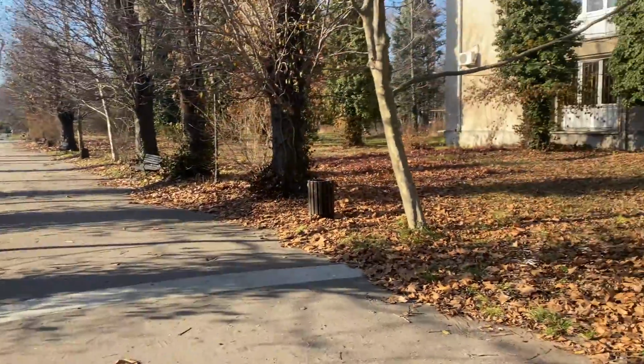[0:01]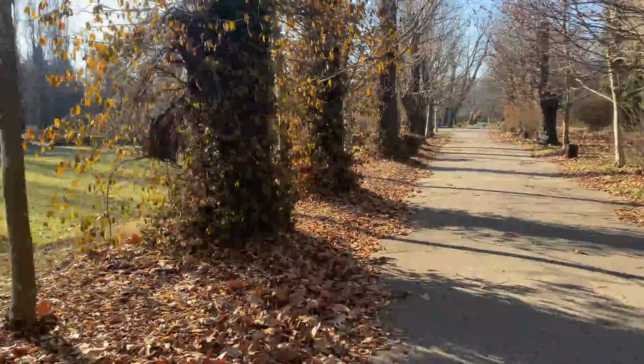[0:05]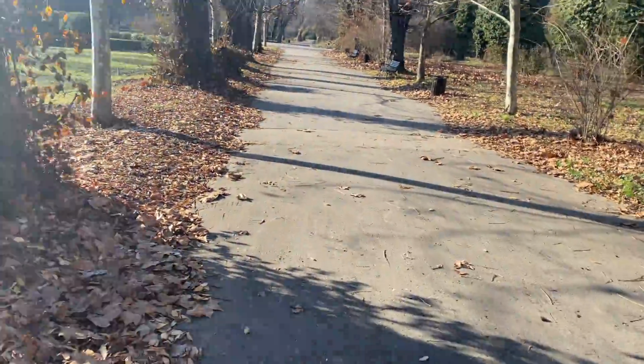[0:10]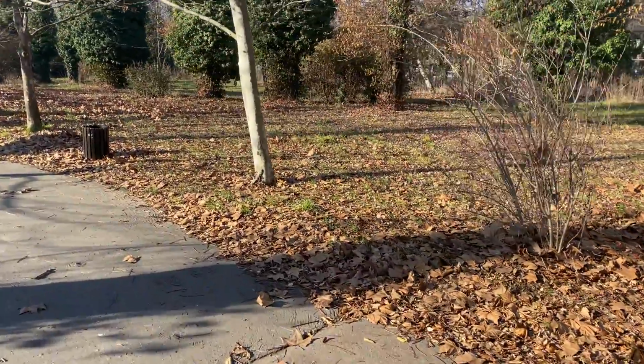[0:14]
Winter days at the botanical garden right here. I'm just looking for some props for this video actually, and I need to find some sticks, right? Let's see what we can get.
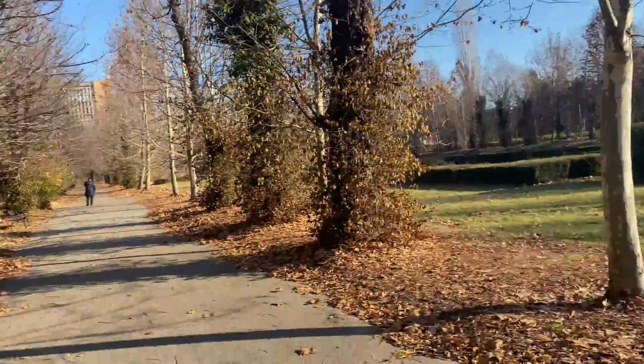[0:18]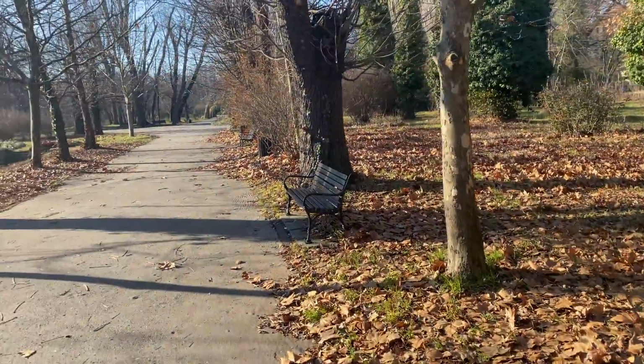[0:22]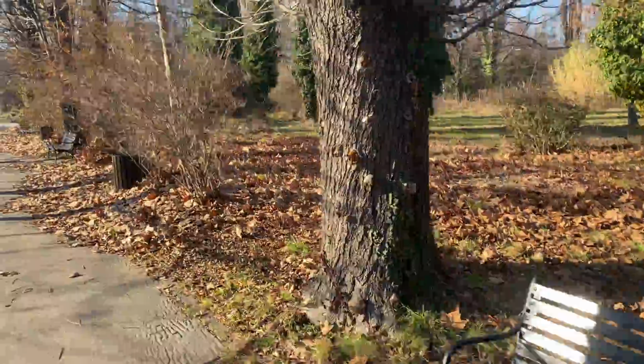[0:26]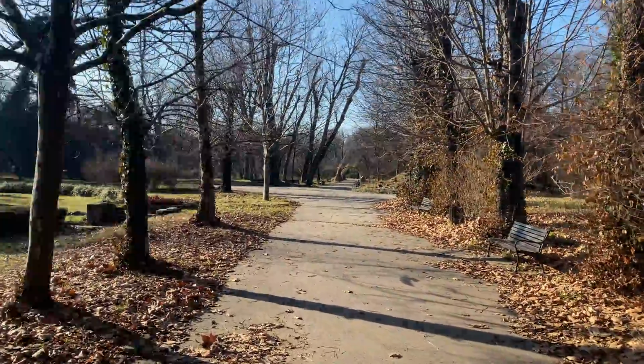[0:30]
So if you guys want me to film around the botanical gardens, maybe in the spring, just let me know, okay? And I'll do that for you.
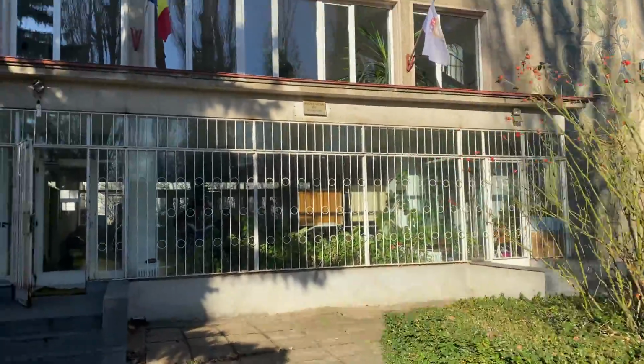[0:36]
I found some sticks. Let's go to the lab and show you what we'll do today.
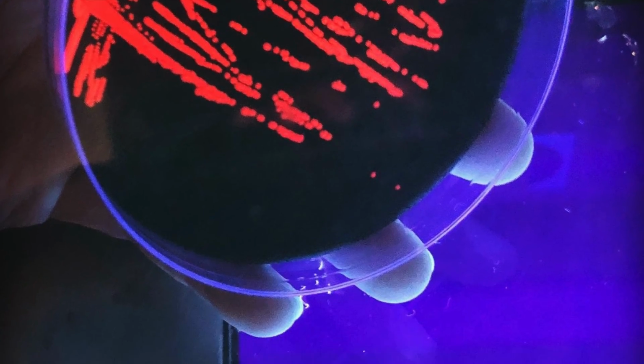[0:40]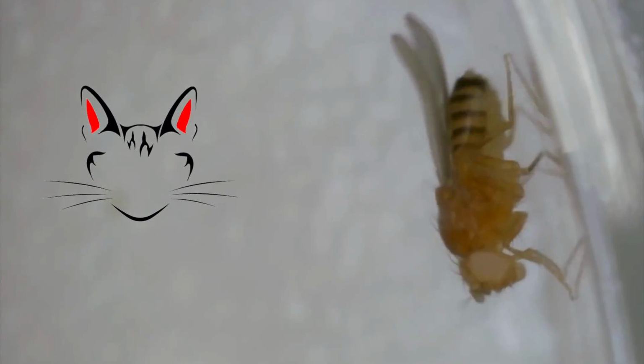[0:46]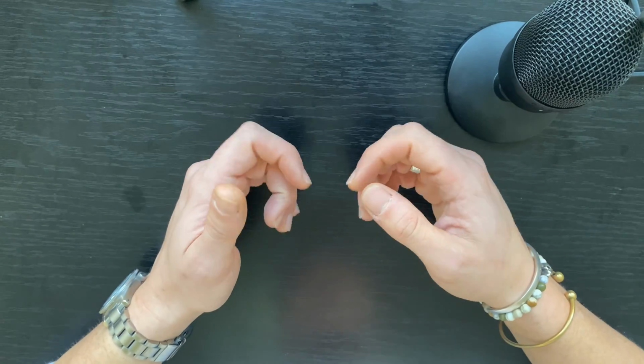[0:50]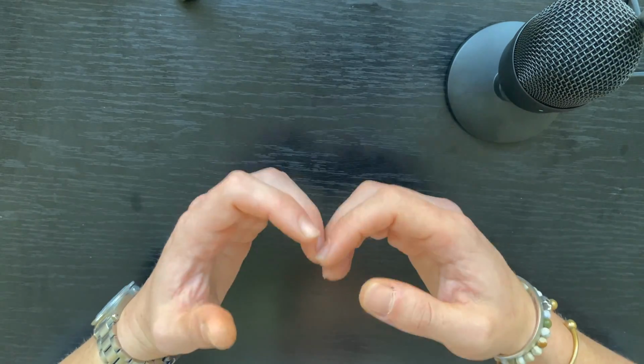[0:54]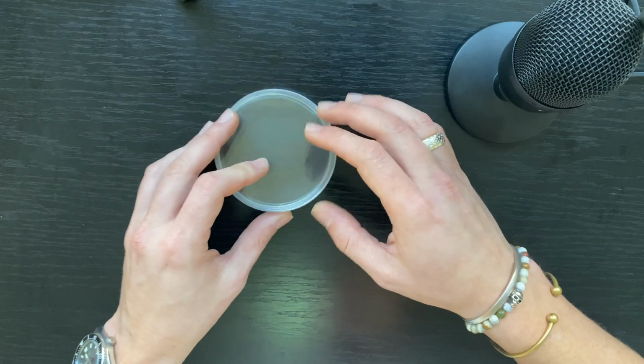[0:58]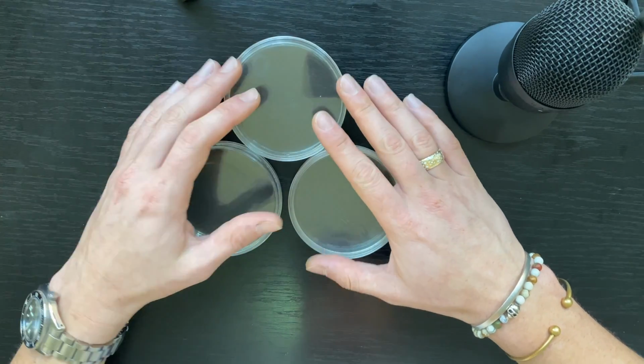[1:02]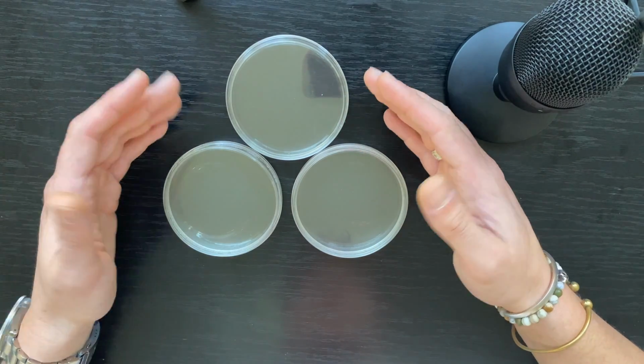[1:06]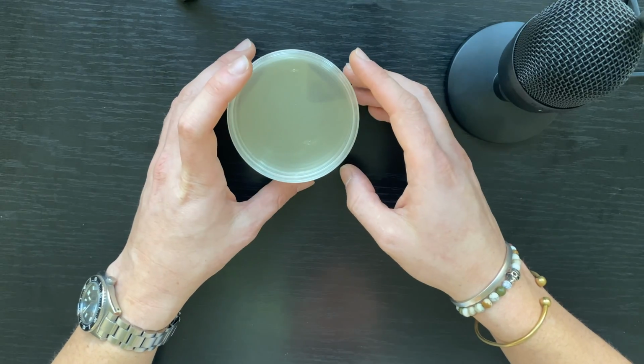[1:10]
Hello again and welcome to the third video of the beginner series in which I teach you how you can do genetic engineering at home in a DIY setting. So in the previous video, we've poured agar plates. Now, I've got these stored in the fridge. However, in order to spread bacteria on them, I'm gonna need to warm them up at room temperature. I am gonna need one more thing though.
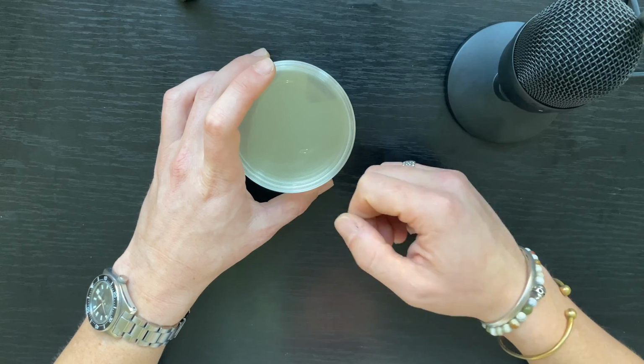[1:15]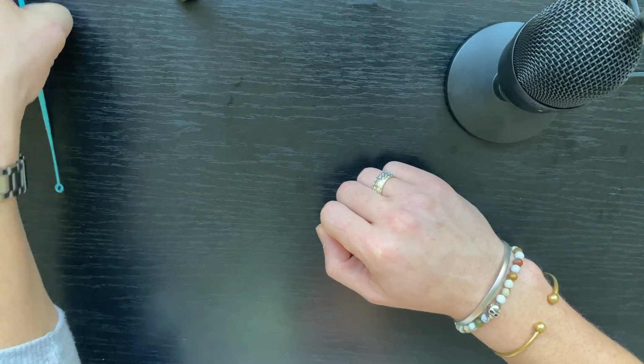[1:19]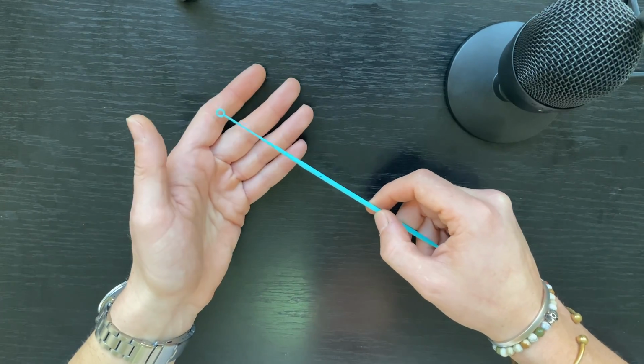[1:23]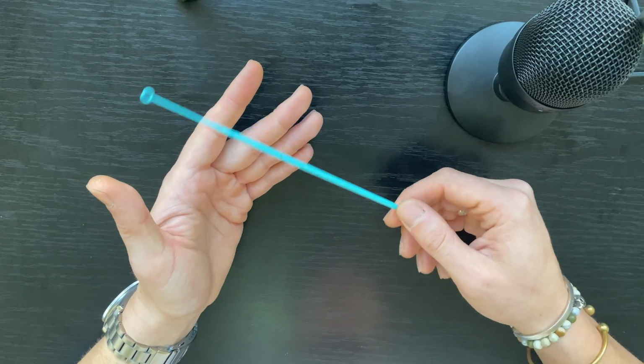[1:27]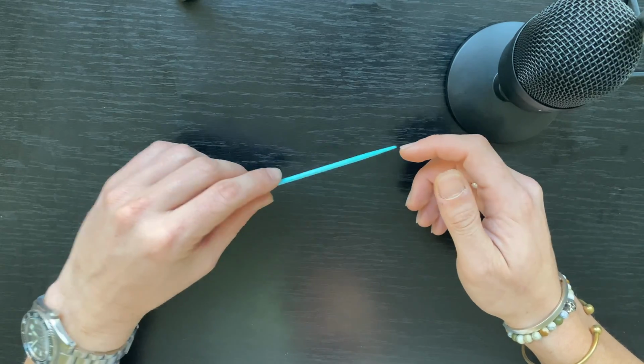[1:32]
I am gonna need inoculation loops. Now, an alternative would be cheap, plastic, single-use, sterile inoculation loops. These are readily available and you can get them for cheap. However, where's the fun in that? Today I'm gonna teach you how you can make your own.
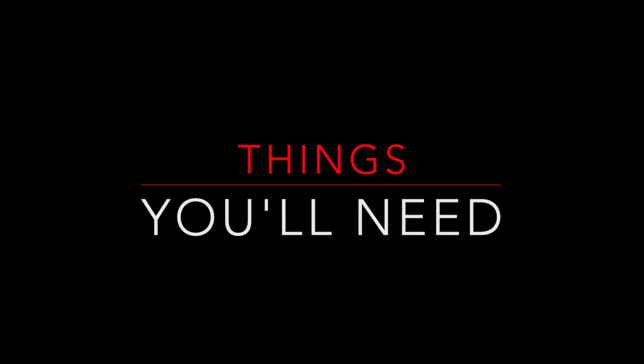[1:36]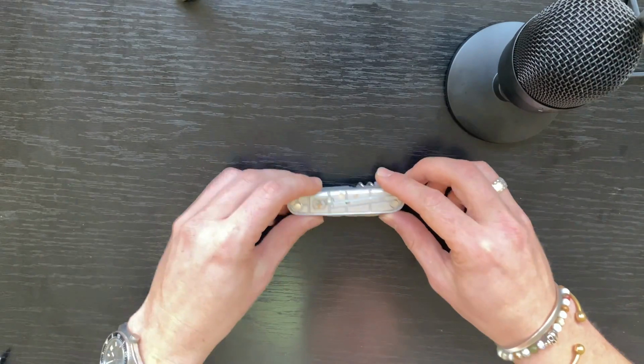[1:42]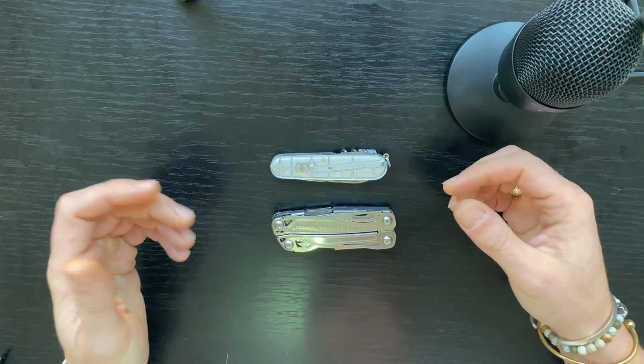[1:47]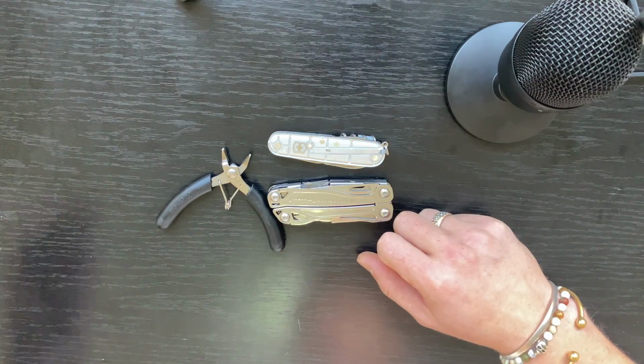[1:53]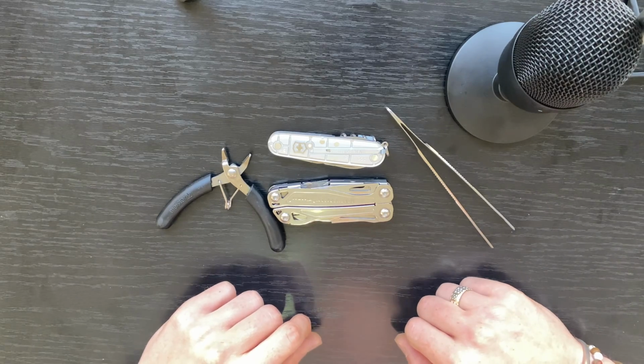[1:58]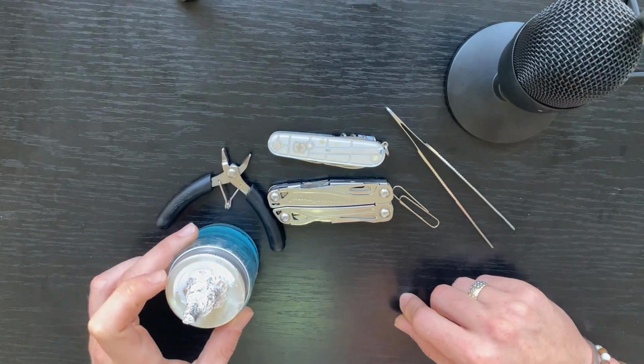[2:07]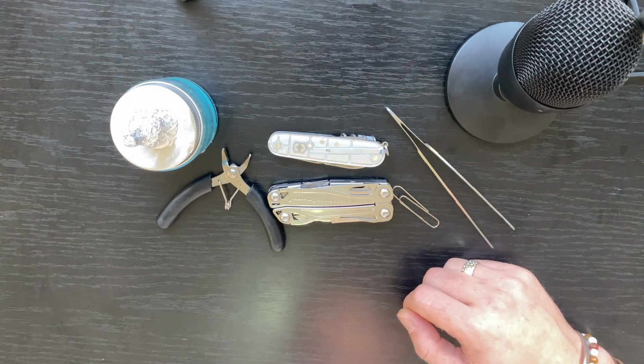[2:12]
So things you'll need: a pocket knife, a Leatherman multi-tool or needle nose pliers, a wire cutter, tweezers would help also, a paper clip, the DIY lamp from video one, a lighter,
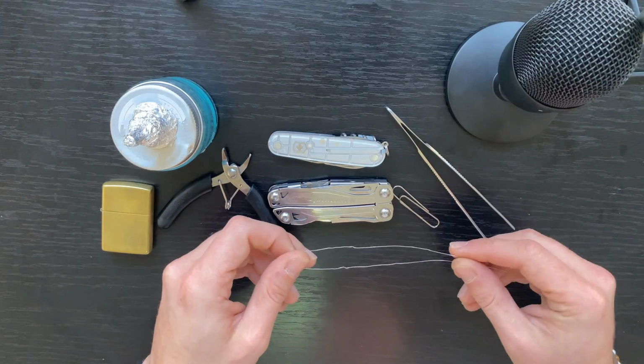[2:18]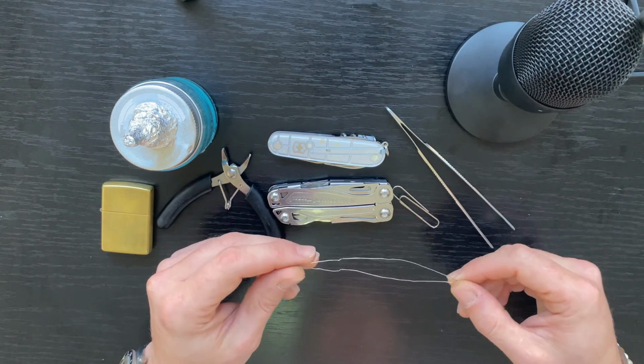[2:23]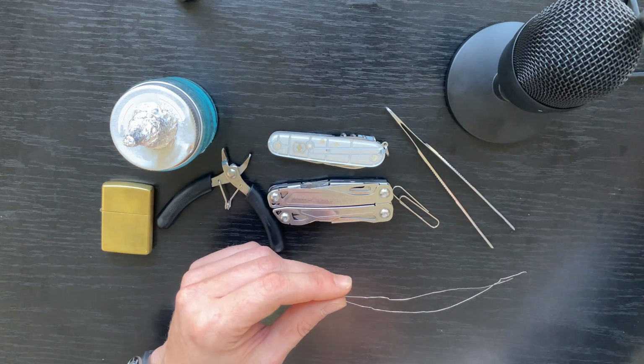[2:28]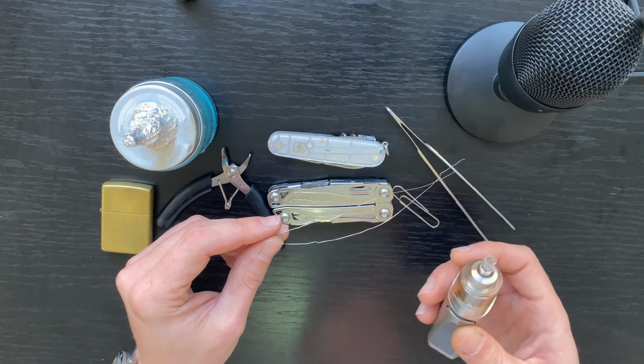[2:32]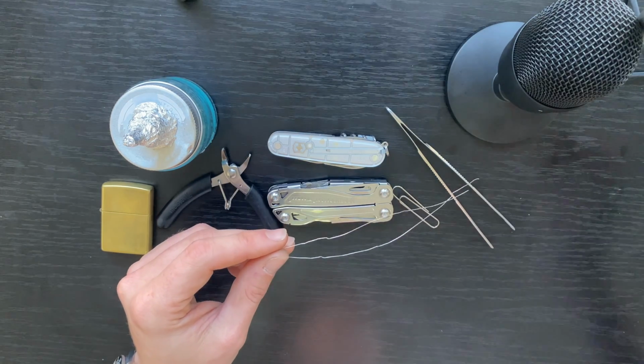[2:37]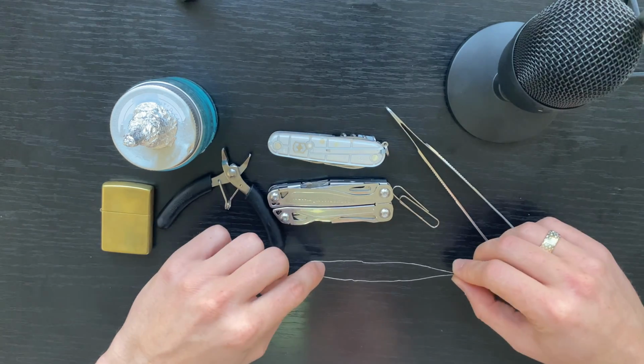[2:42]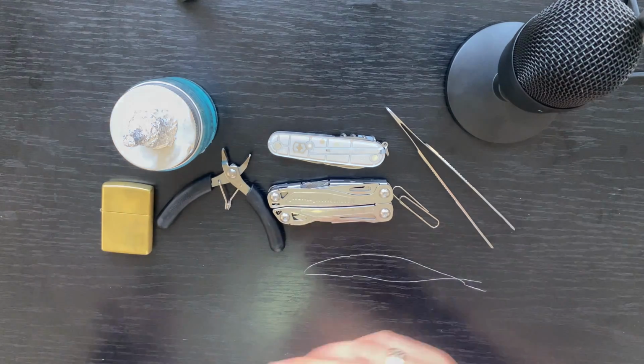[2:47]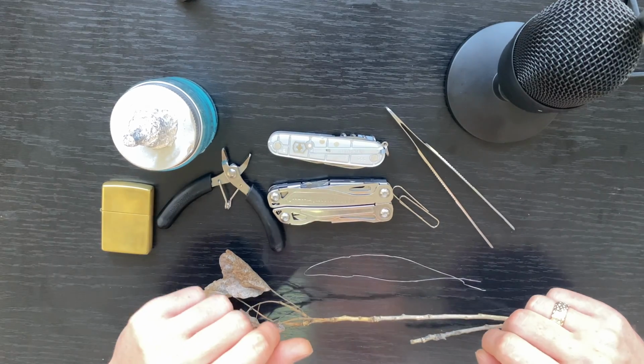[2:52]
stainless steel wire. You can get them for absolutely dirt cheap at a vaping store. If you don't know what a vaping store is, here is what they sell. So these are, you know, vaping products. Yeah, so I cannot imagine them not being available in any country, the US or EU or whatever. And the last thing you'll need is a stick. Yeah, so let me show you how it's done.
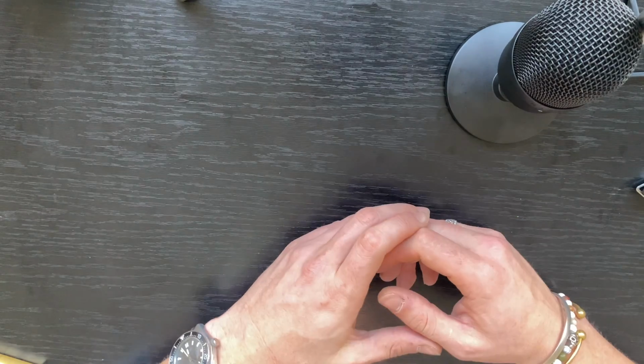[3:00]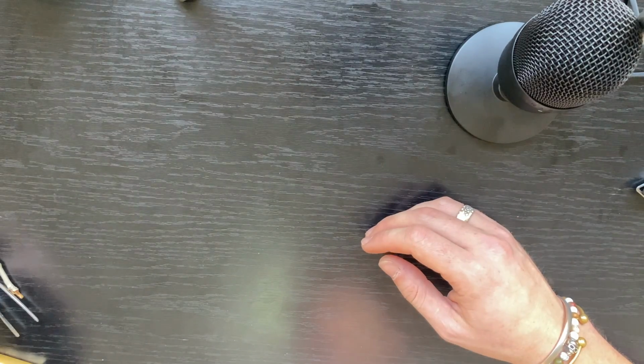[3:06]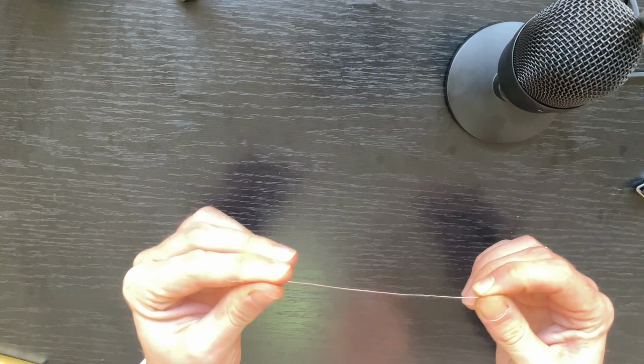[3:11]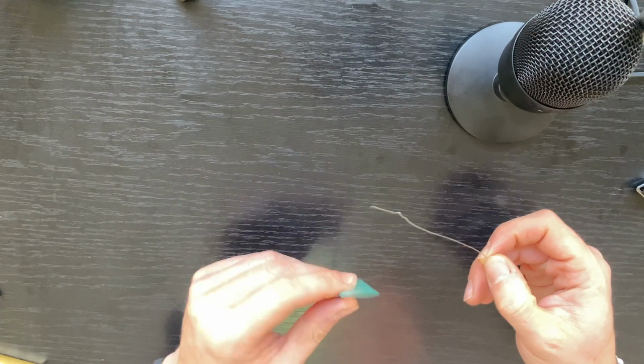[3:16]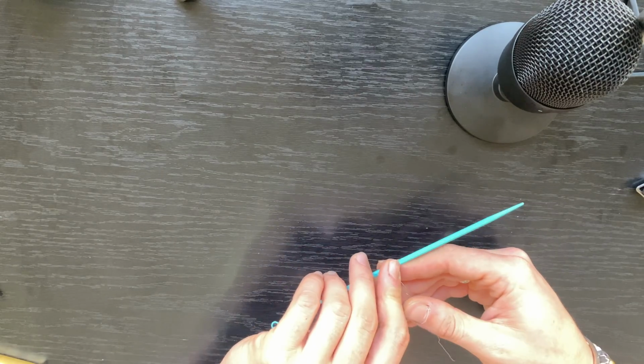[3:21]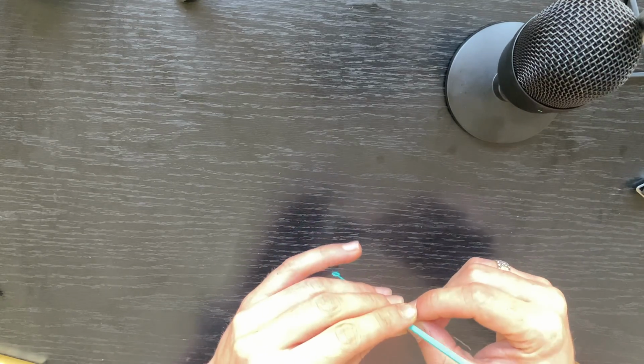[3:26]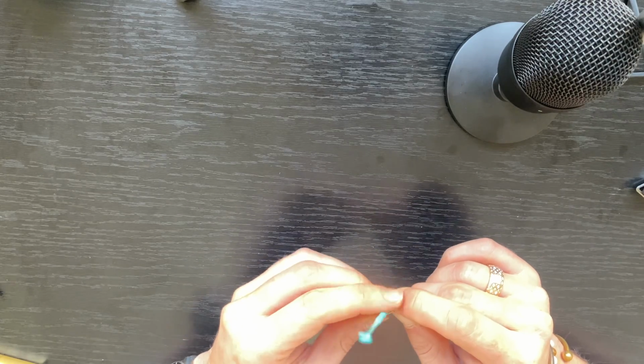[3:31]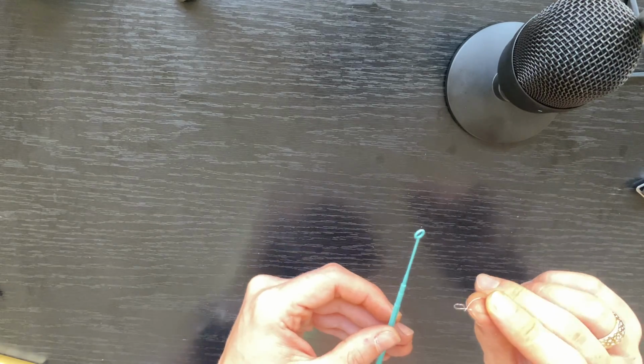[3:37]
Okay, so now we will make first of all the inoculation loop itself, then the handle. So in order to make the inoculation loop, you're gonna need the wire. You can straighten this up. Then you're gonna need a pen or cylindrical object, and just bend it on itself like this. Then you must twist it like this, and this will basically create the beginning of your head right now, as you can see right here.
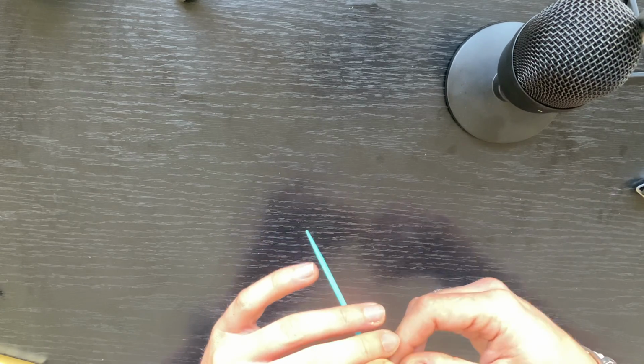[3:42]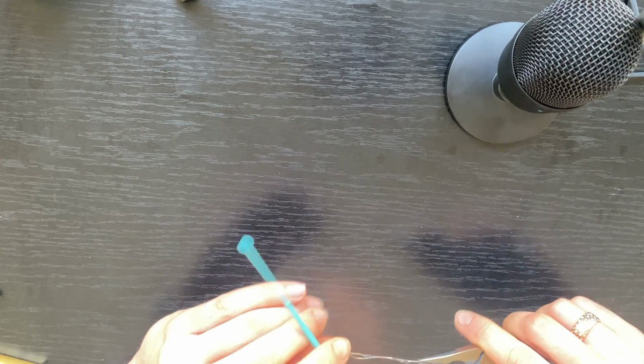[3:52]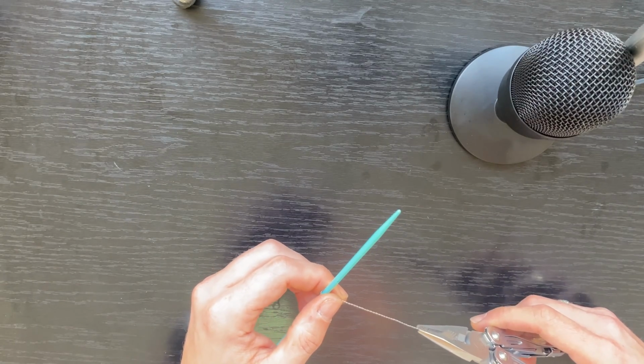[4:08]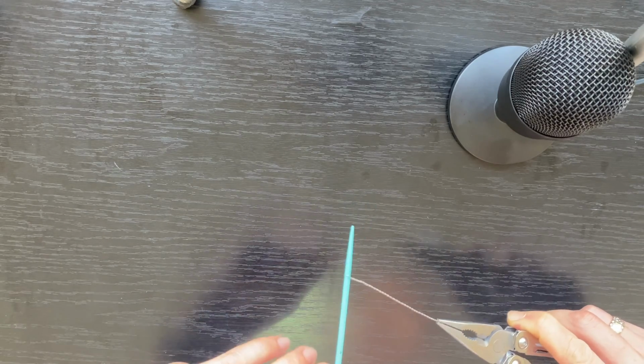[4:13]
Okay, so what you need to do now is get your needle nose pliers in here and start twisting it. I'll show you the final product when it's done. Okay, so this will be the final product. This would be your inoculation loop.
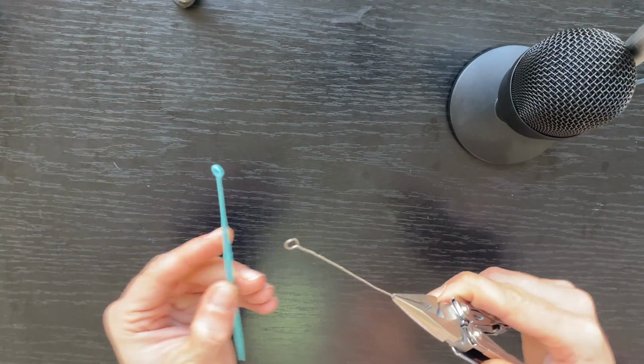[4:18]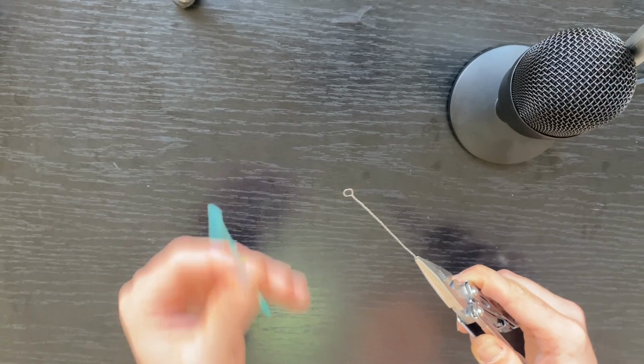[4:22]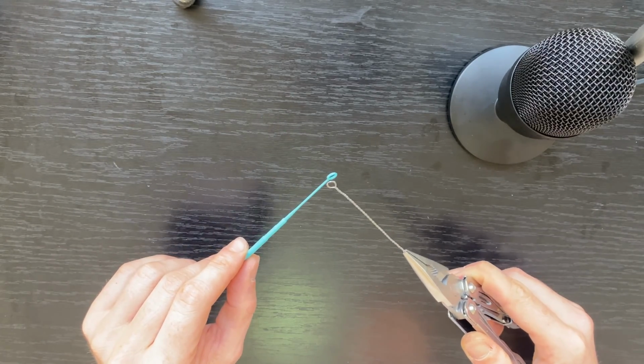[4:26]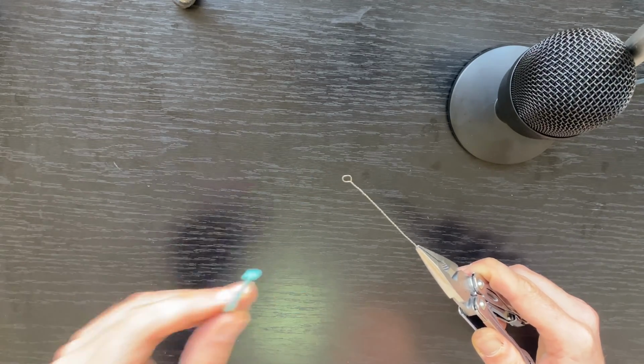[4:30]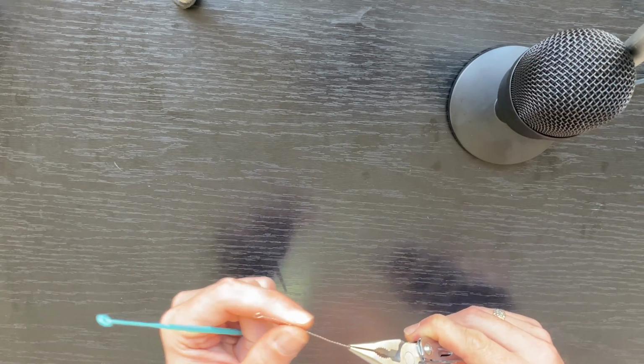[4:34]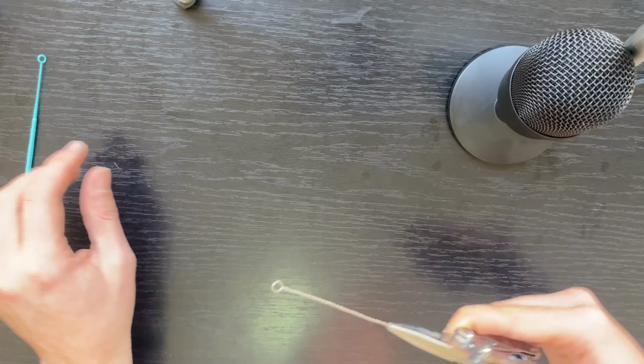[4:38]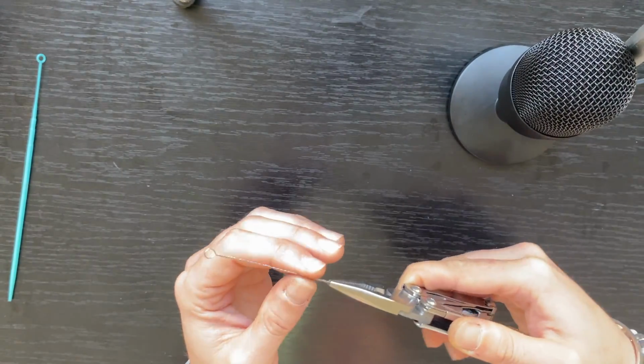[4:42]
I don't know if you can see that, but this is basically calibrated at 10 microliters. So what that means is it will hold 10 microliters of liquid in this circle right here. So you can make your circle as big as you want, and you can make your inoculation loop as big as you want. But yeah, so this is the final product right here. Now let's get to the handle.
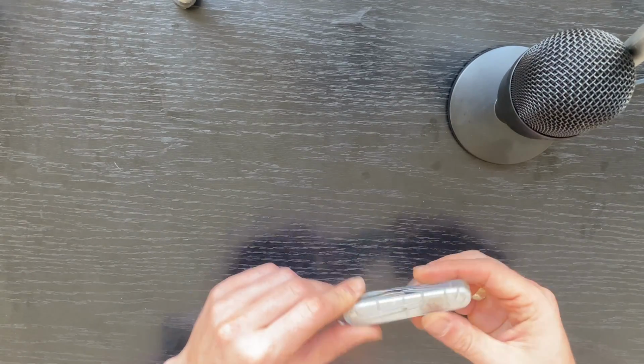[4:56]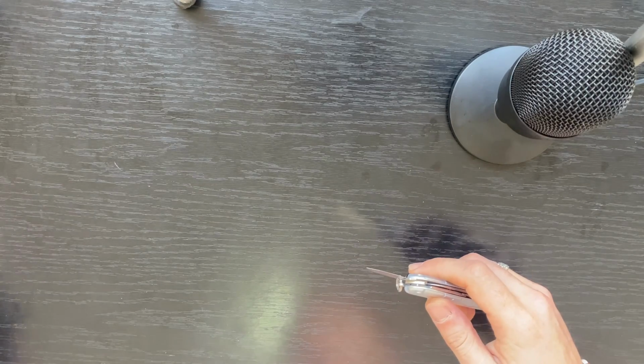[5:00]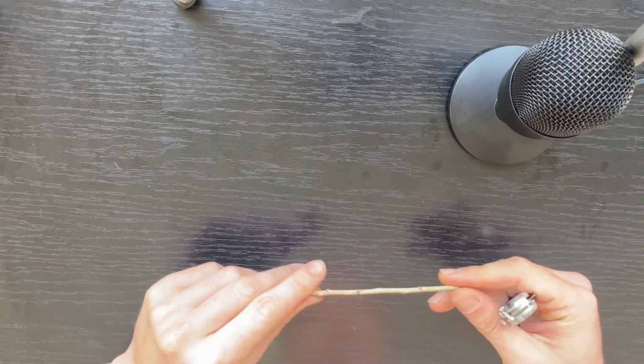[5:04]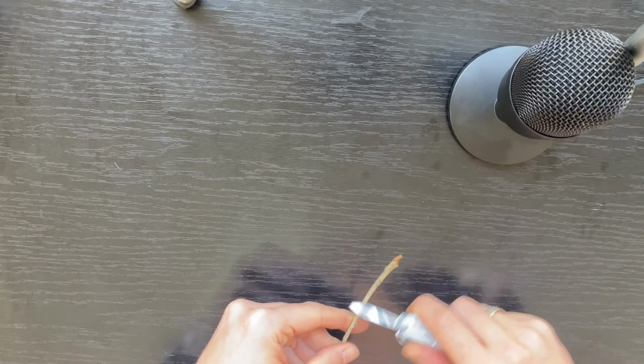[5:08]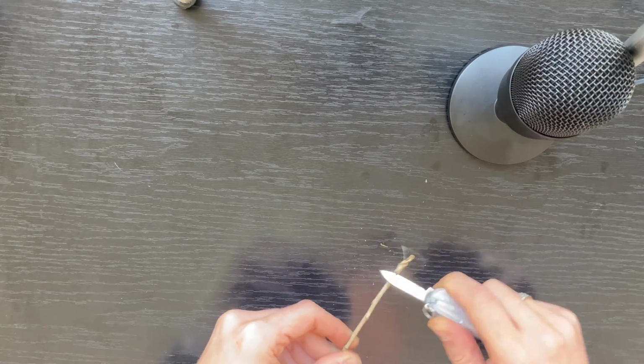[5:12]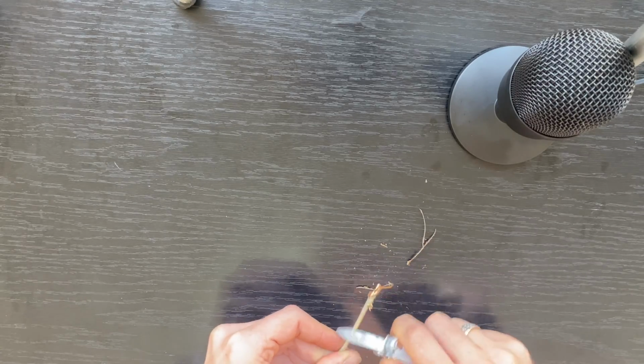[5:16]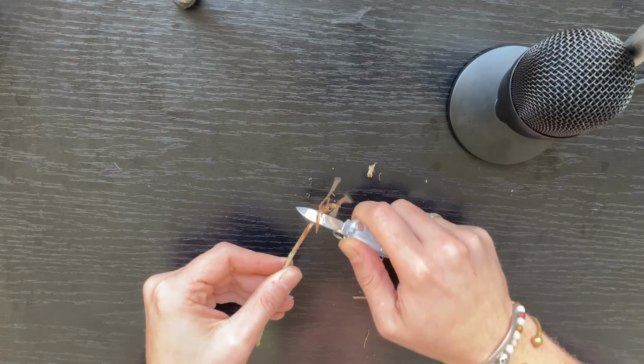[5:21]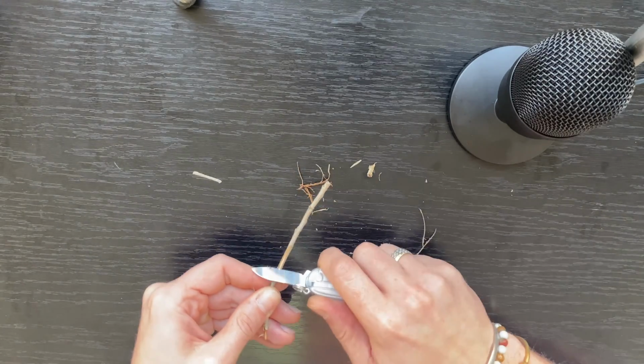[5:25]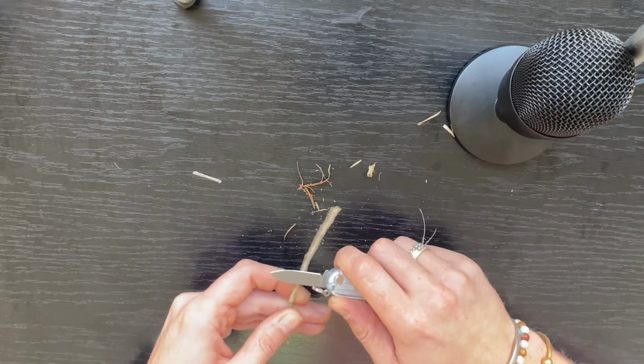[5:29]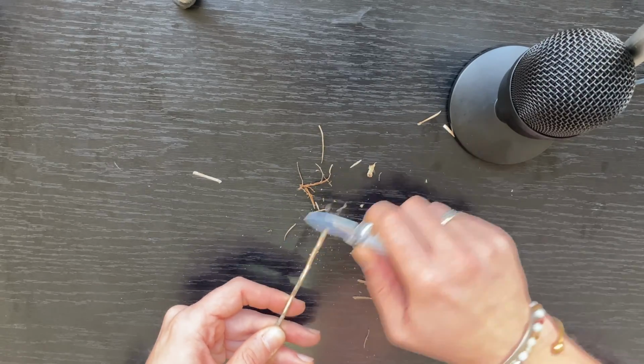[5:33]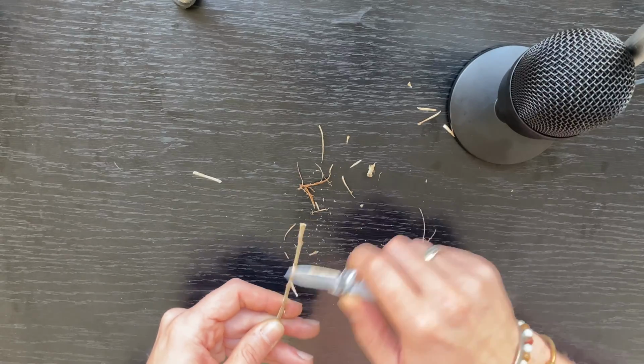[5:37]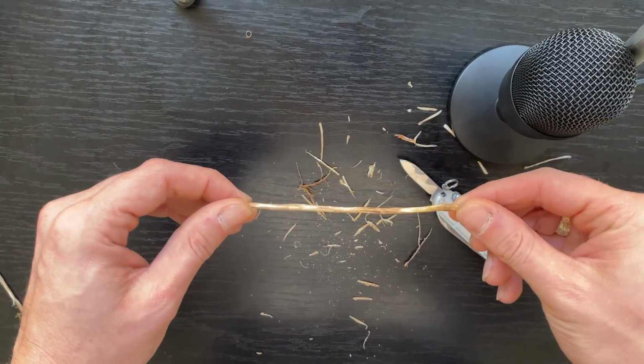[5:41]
So in order to make the handle, you're gonna need your small pocket knife. I'm using a Victorinox. Then probably you're gonna need a vacuum cleaner, because we're gonna start first of all by removing this bark right here. You know, make it pretty. Just be careful not to break the wood, right? Just take it easier and do it. Right? So this is the final product right here.
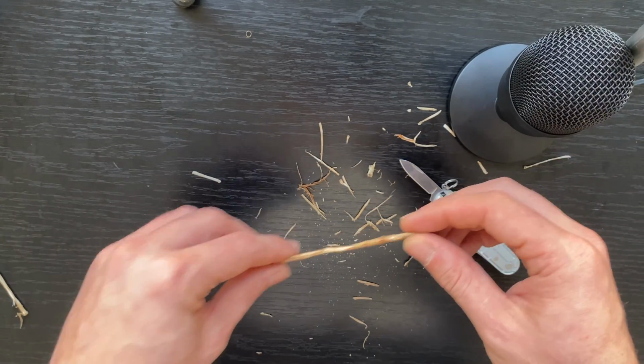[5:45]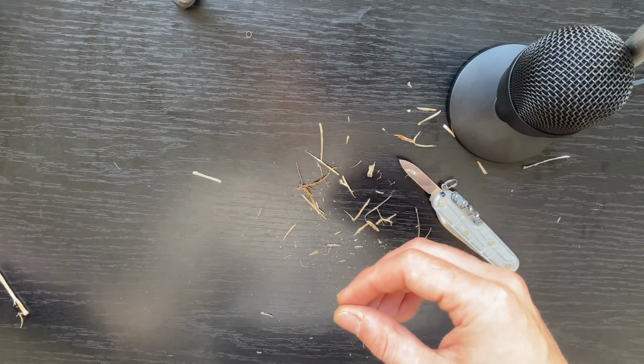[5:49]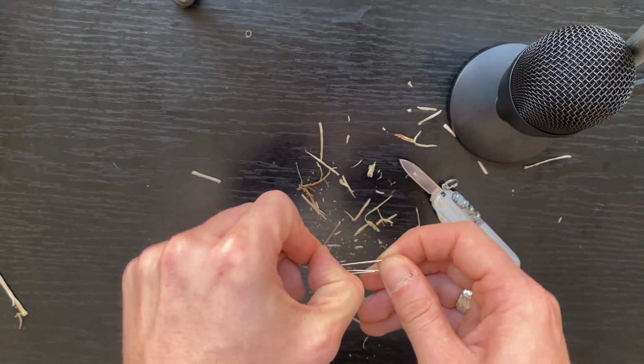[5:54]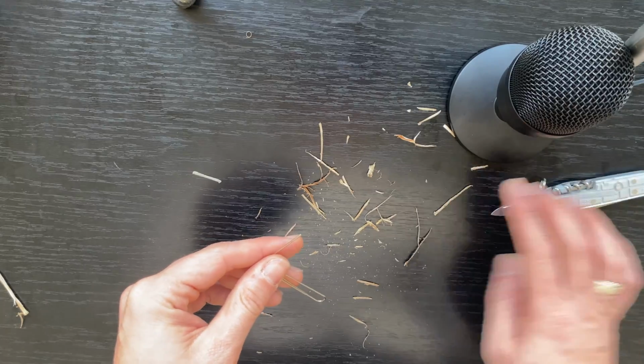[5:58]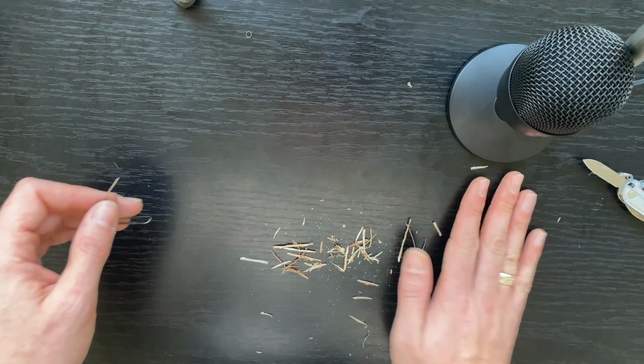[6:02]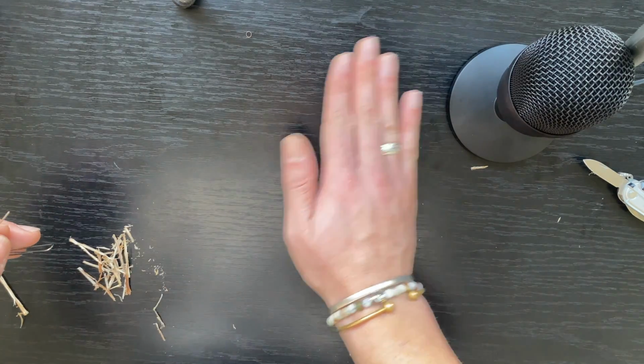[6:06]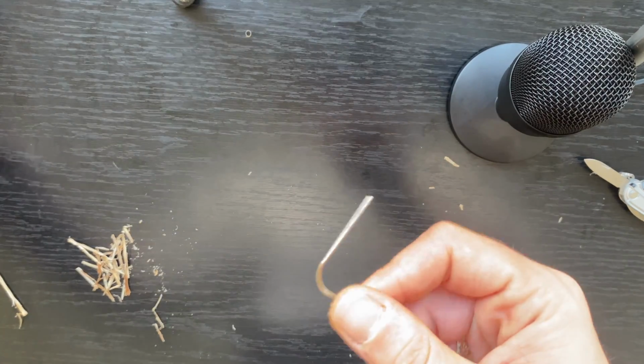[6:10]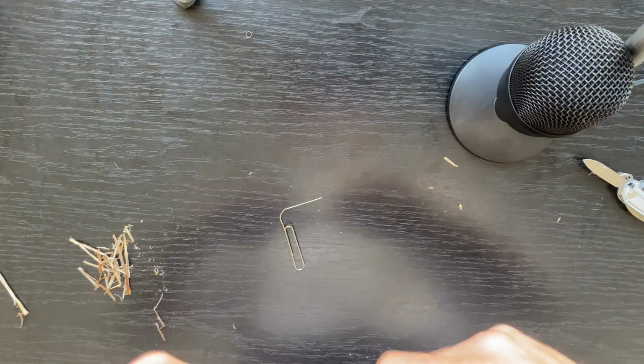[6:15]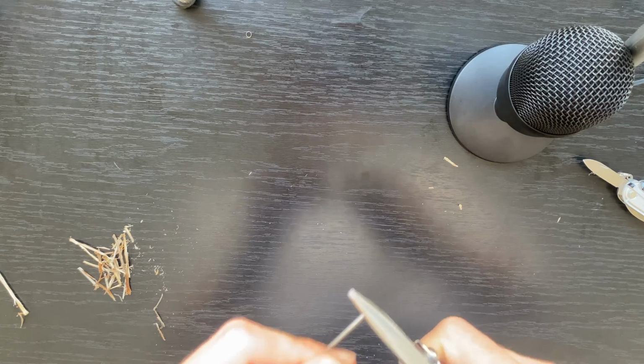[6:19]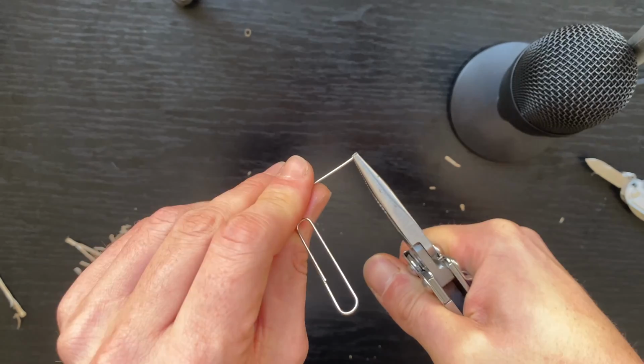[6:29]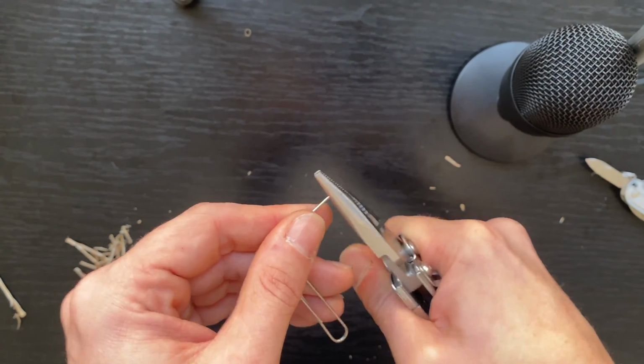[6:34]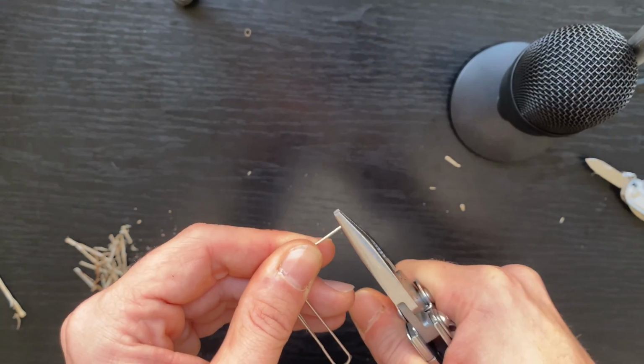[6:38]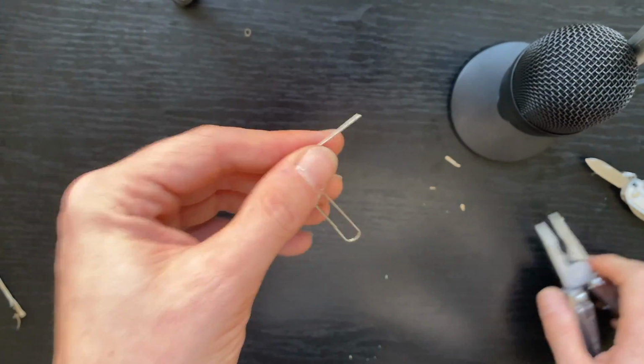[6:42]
Now, what I'll need to do next is basically drill a hole in this. So this will be my paper clip. I'm just gonna bend it this way. Just let me clean this a bit. Okay. So what I'm gonna do now is basically take my needle nose pliers and try to flatten this head a bit, so that it will act like a drill. Okay. I can also use a tiny hammer if I need to.
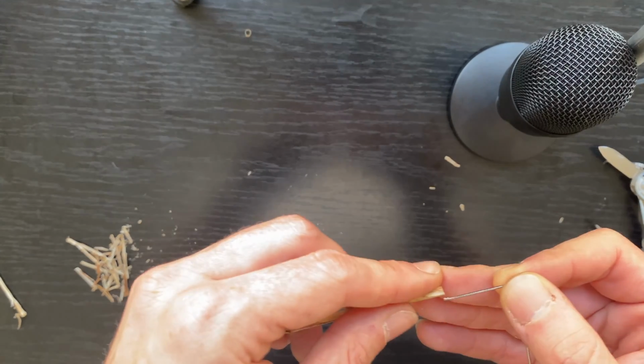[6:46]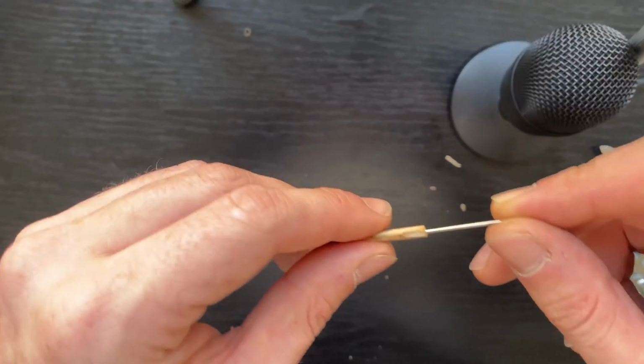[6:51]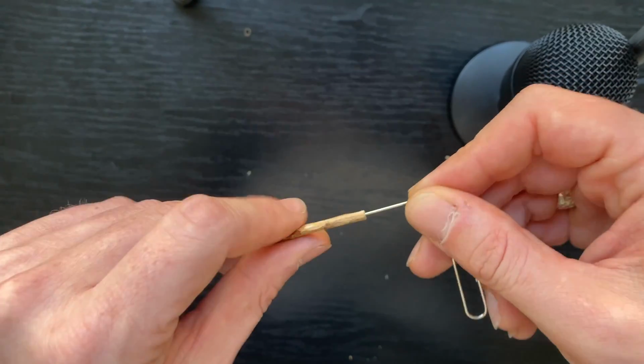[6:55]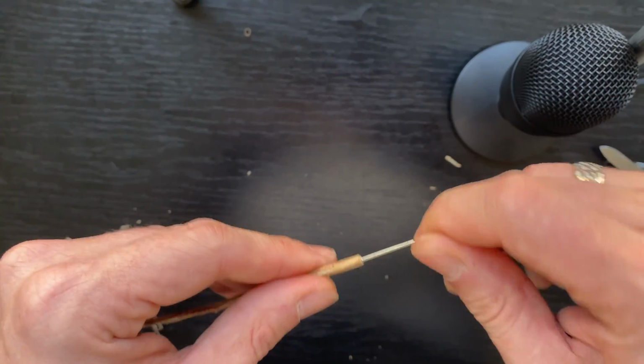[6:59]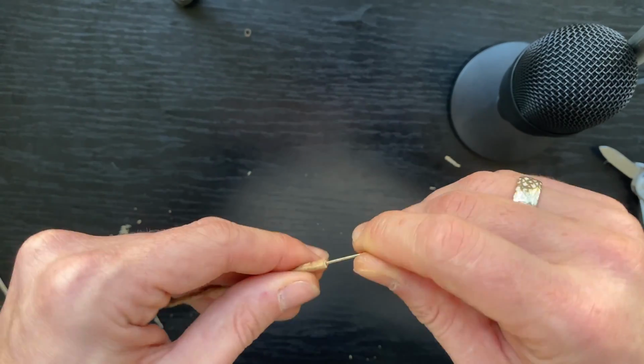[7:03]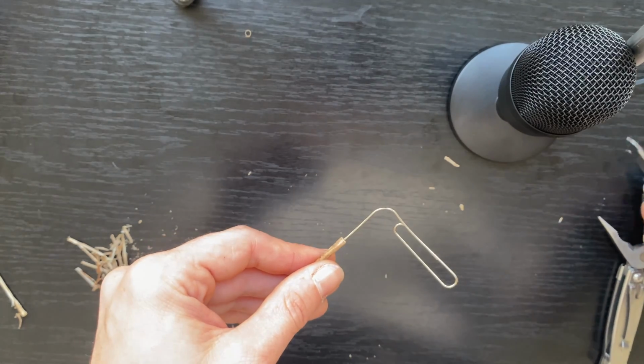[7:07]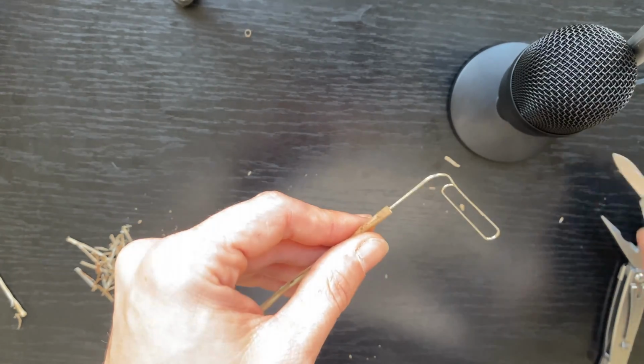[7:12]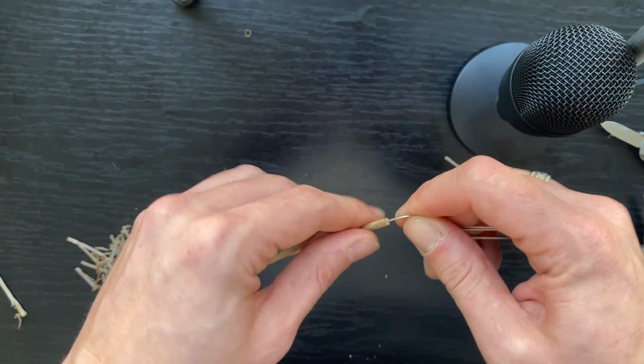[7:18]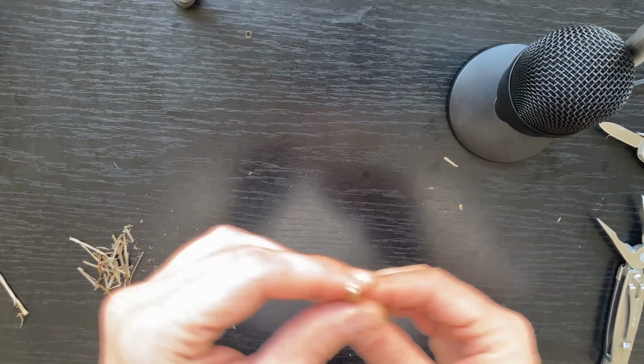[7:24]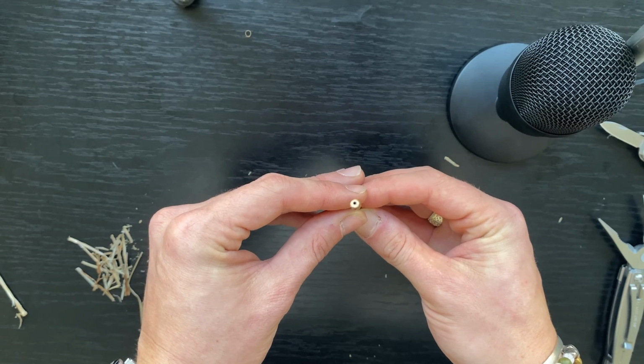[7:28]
Okay, so what I'm gonna do next is I'm going to take my stick and centered, I'm gonna start drilling in it. So this will take a while. And be careful not to break your wood, right? So just start drilling. Do this until you reach like a length of 2-3 centimeters, an inch. Okay, so do this. Now, after you've drilled a hole, let's take it out. You can see the hole right here. It's pretty centered. Really happy with it.
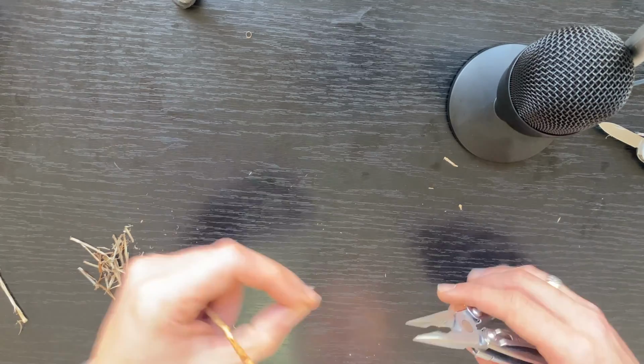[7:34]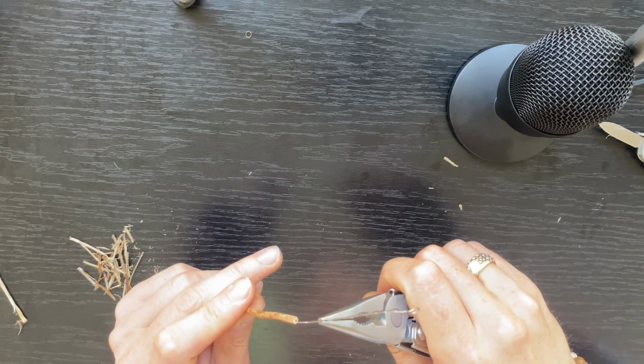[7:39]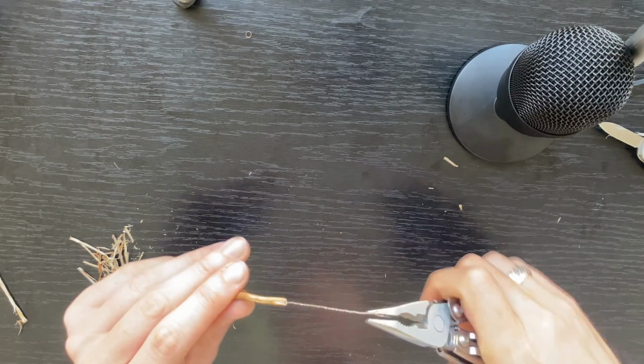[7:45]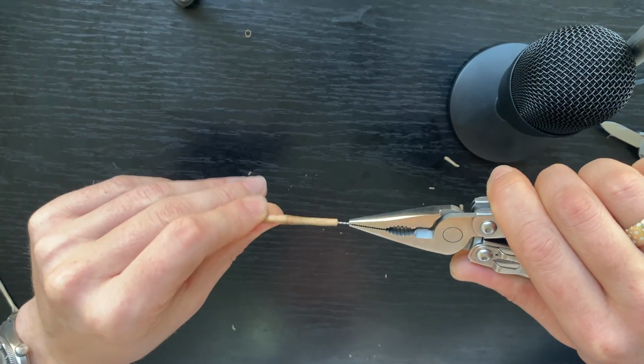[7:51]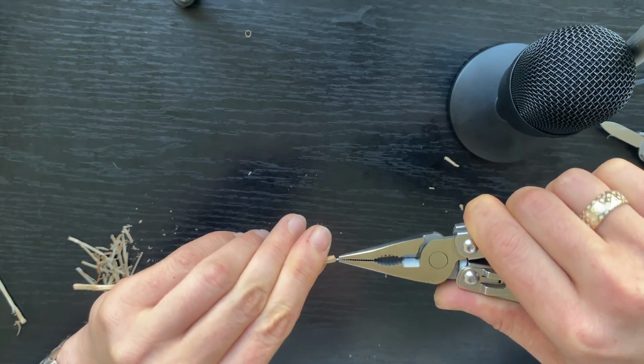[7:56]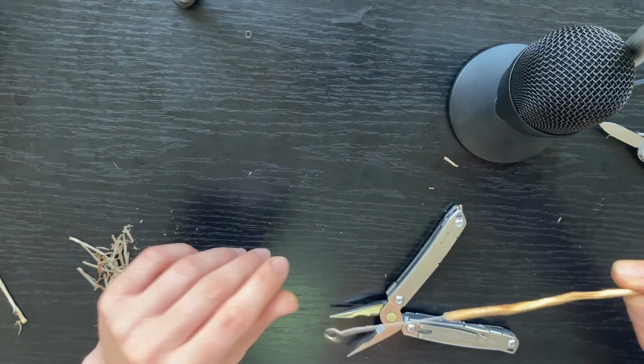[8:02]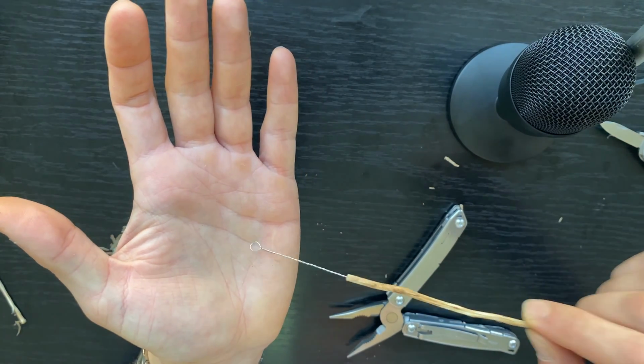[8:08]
Now what you need to do is take your inoculation loop. You can see that it's twisty. Just put it in this center hole right here. And then you can just twist it a bit the other way around. Just get it in there. Good. Okay, so I can feel it. This is not going anywhere unless you want it. So this is a simple inoculation loop. You can see it's pretty springy, so this won't hurt your agar.
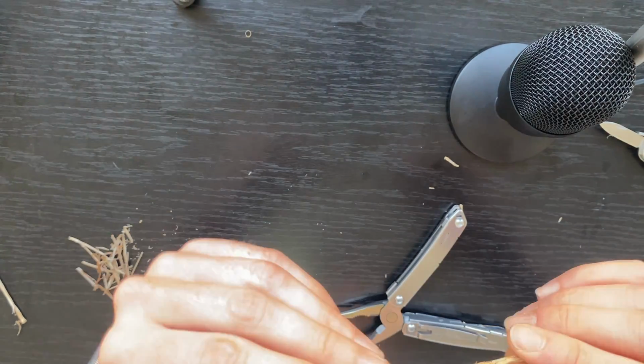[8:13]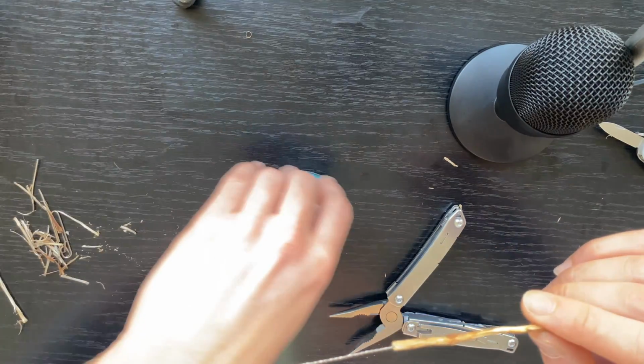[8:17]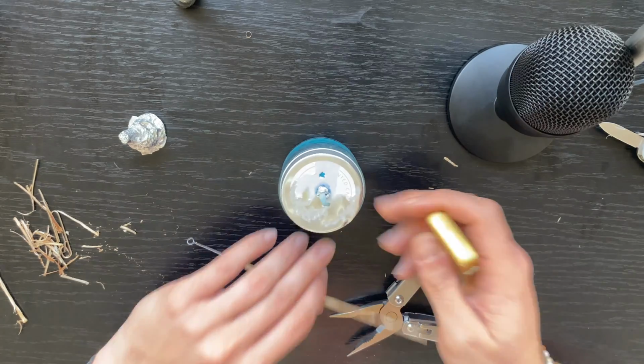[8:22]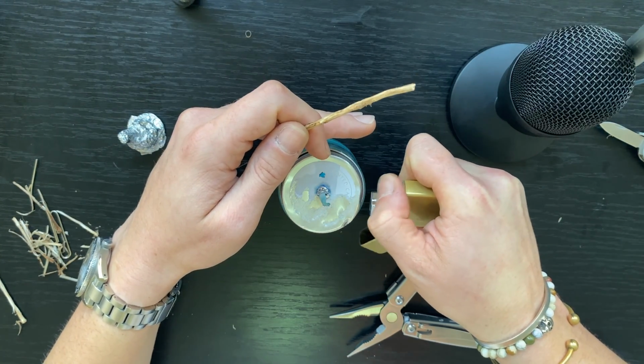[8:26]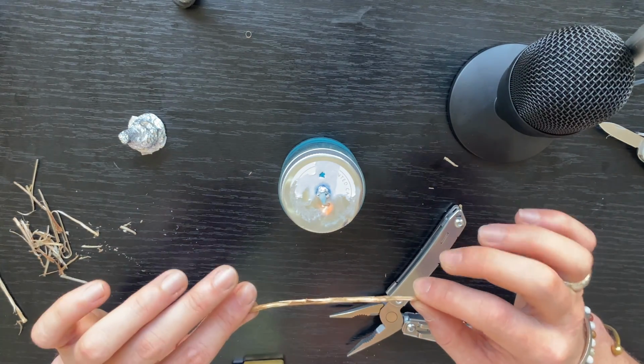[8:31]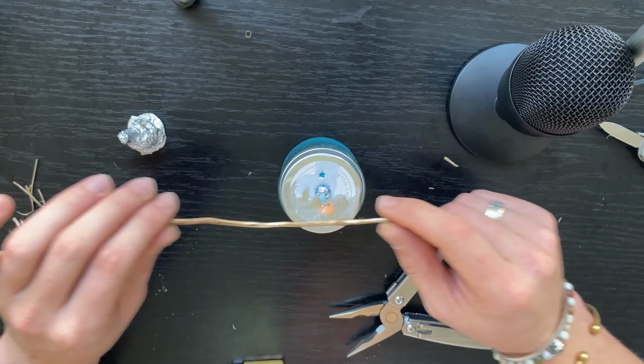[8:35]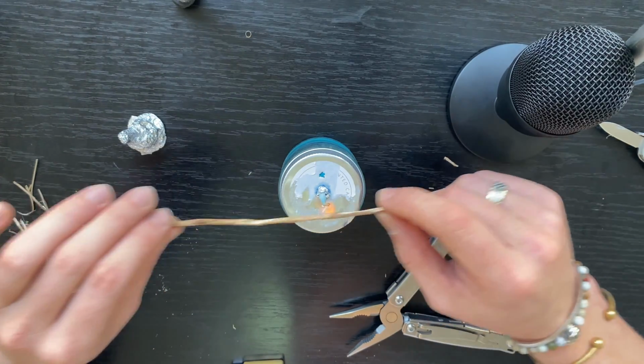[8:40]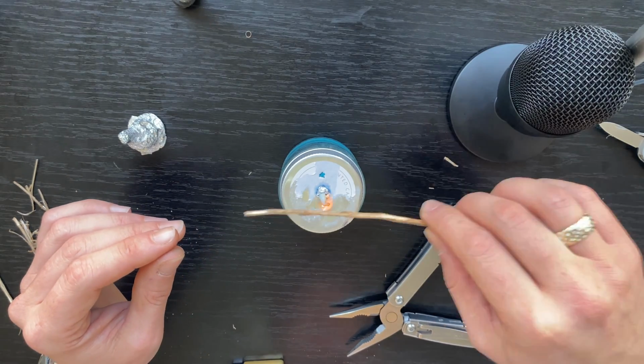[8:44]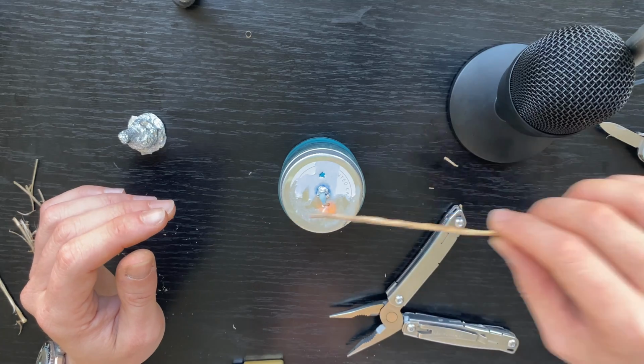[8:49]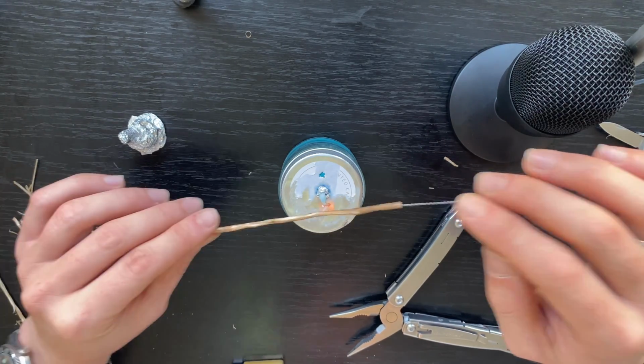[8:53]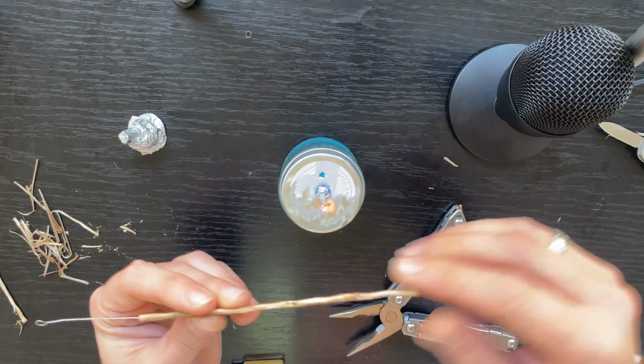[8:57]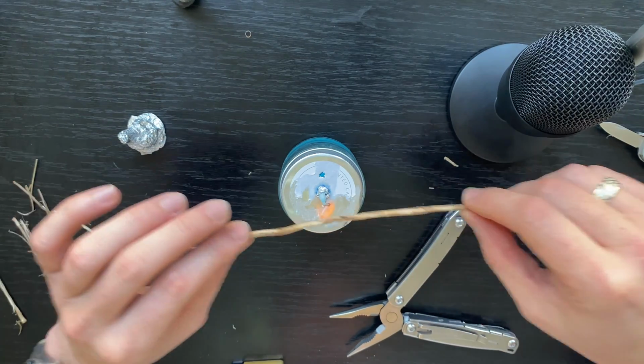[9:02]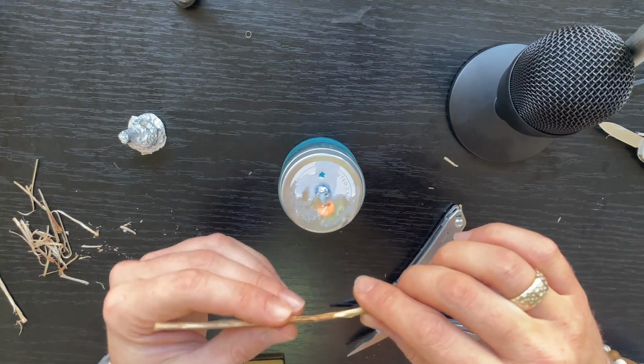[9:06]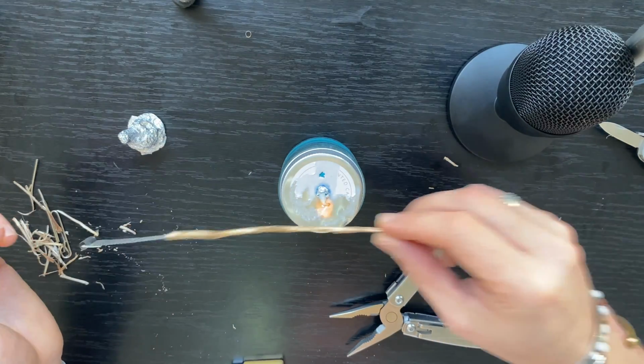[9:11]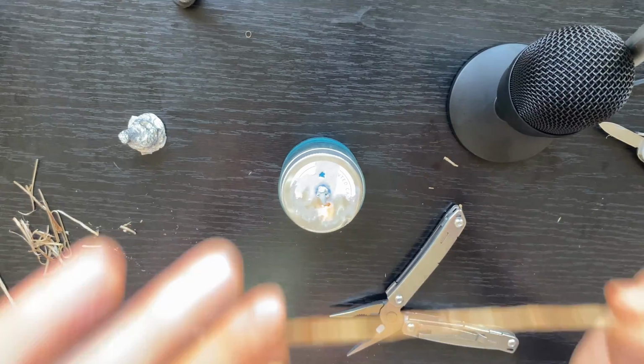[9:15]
Now, what I like doing next is basically harden the wood a little bit. So you have your alcohol lamp right here. You can just light it. And I'm not a wood hardening expert. However, what you need to do is basically get this warmed up so that all the moisture can leave the wood. Just don't burn it, right? So I think you'll need patience with it. This will harden the wood handle a bit. Okay, and then you can put a layer of lacquer or whatever on this wood right here. Right, so this would be your inoculation loop with your handle.
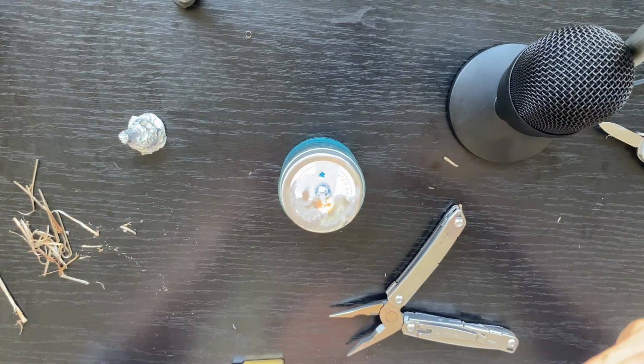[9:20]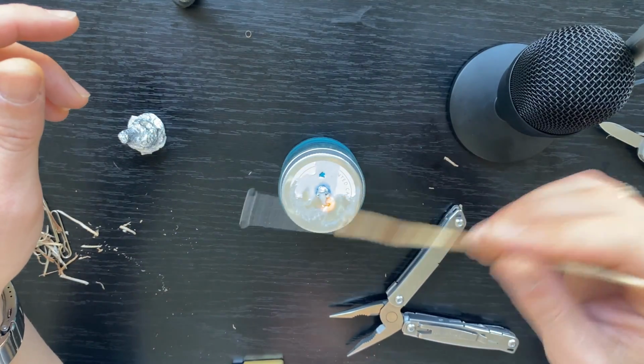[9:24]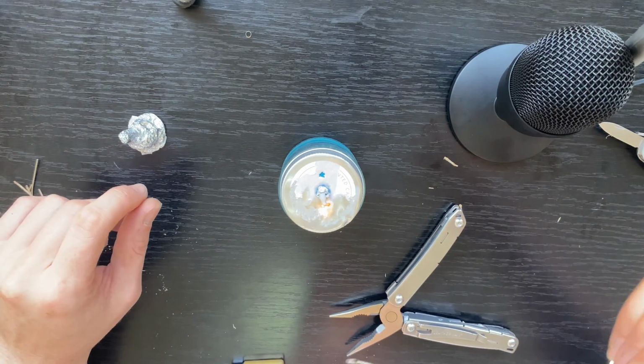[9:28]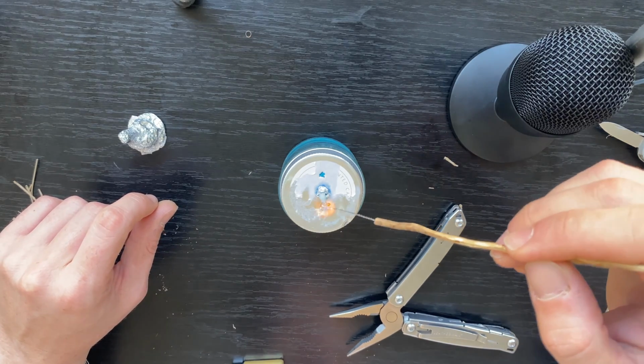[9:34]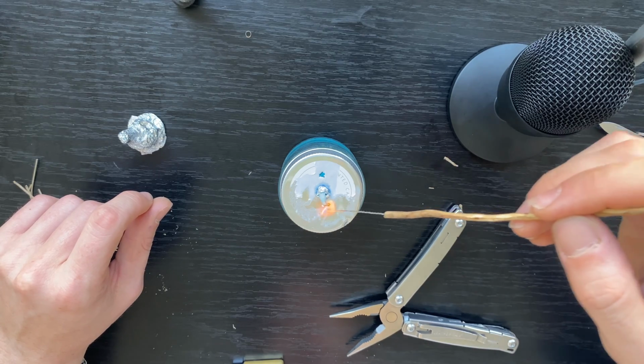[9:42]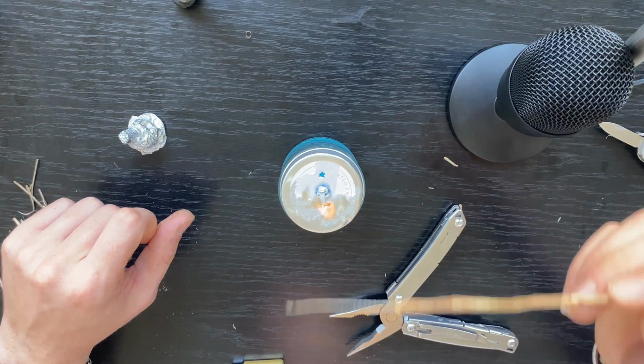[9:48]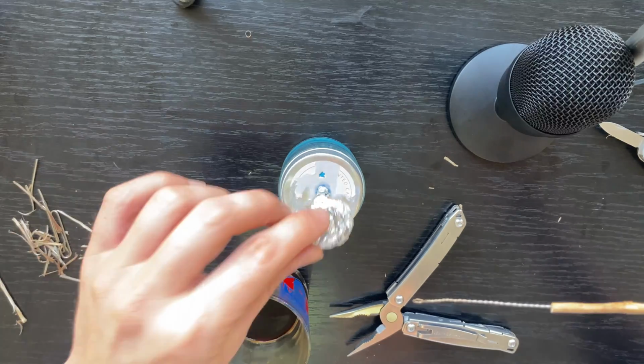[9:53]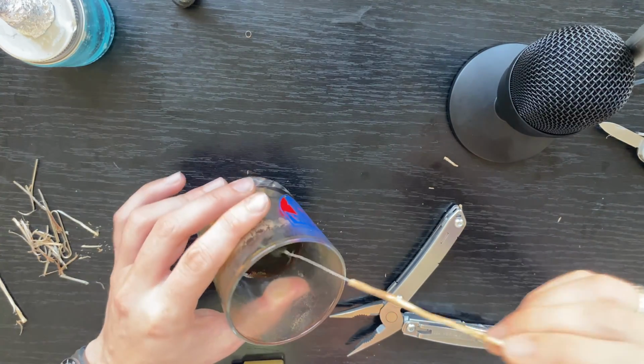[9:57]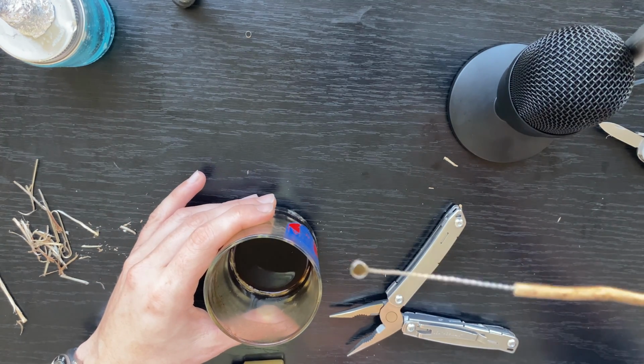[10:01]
Of course, you need to sterilize this after using it, and I would suggest dipping it into alcohol, and then just, at a 30 degrees angle, just make sure it's red hot. And then you're gonna touch your agar a bit, just making sure it's cool. Let's see if I can get some liquid with it. Okay, basically this would be how you inoculate bacteria.
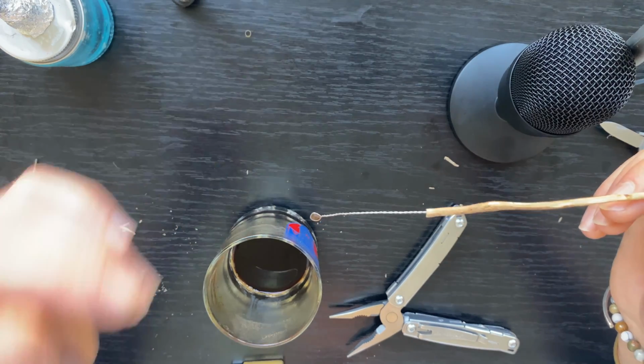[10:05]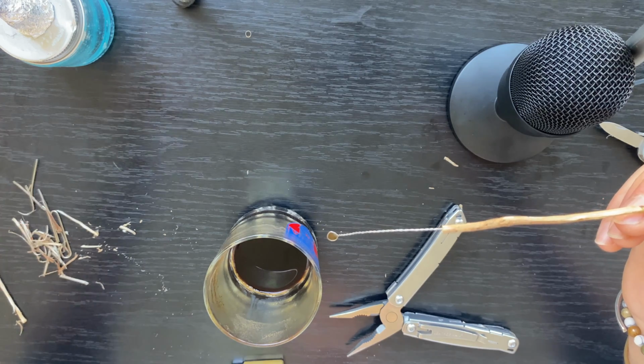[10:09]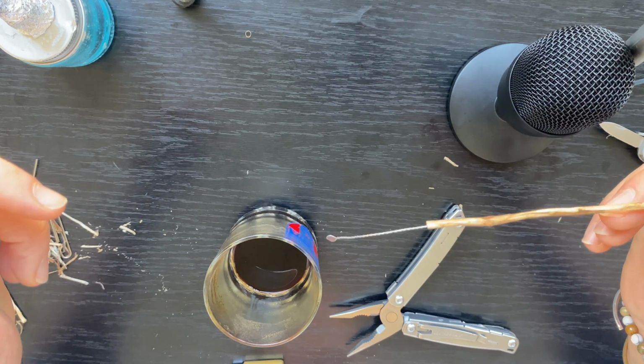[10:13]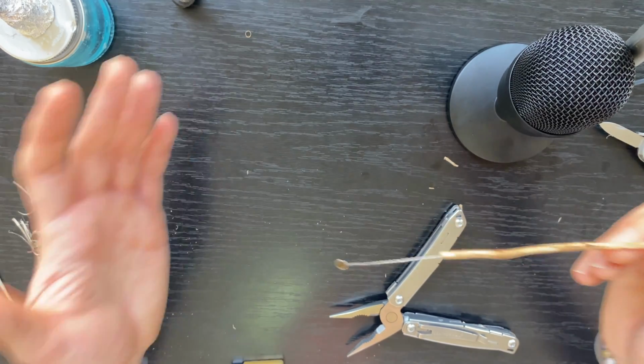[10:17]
So stay tuned for the next video in which we'll do exactly that, and maybe make a very, very cheap and inexpensive and easy to do incubator. So have a nice one.